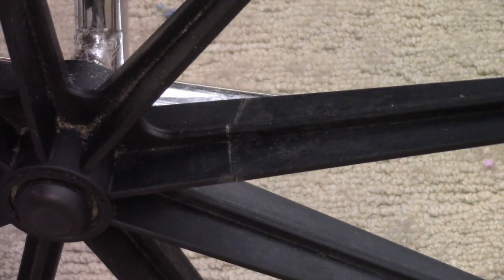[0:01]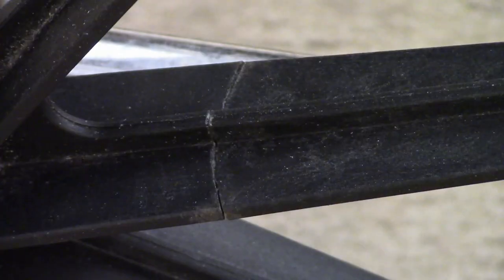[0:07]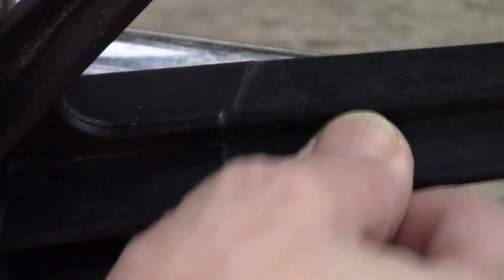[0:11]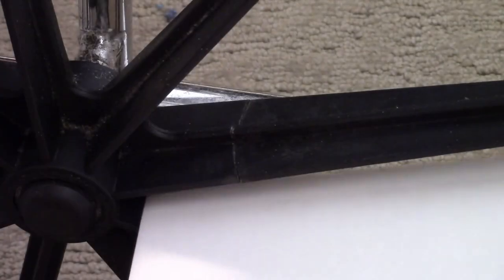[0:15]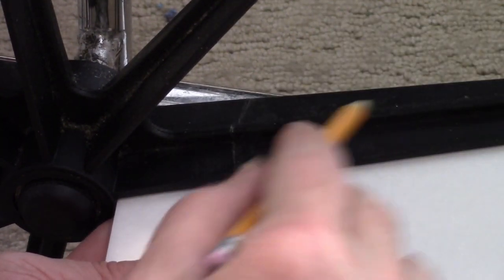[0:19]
My mother-in-law asked me to print her a new brake handle for her wheelchair. And while I had it, I looked at it and found a couple of other problems, including one of the spokes broken. There didn't seem to be a lot of strain on the spoke, so I thought I could print a splint for it.
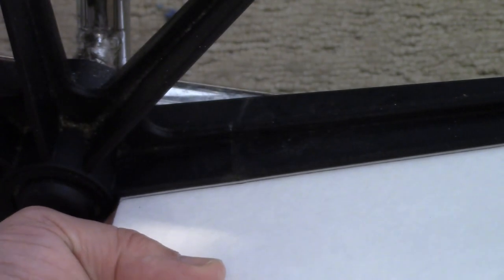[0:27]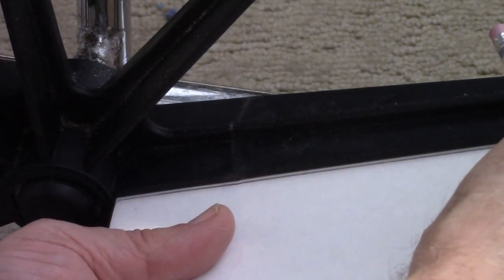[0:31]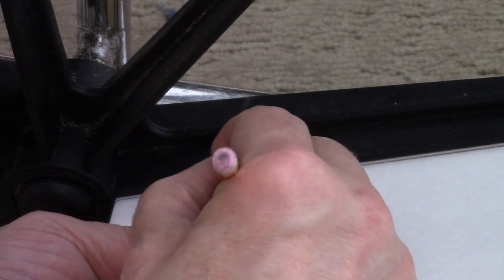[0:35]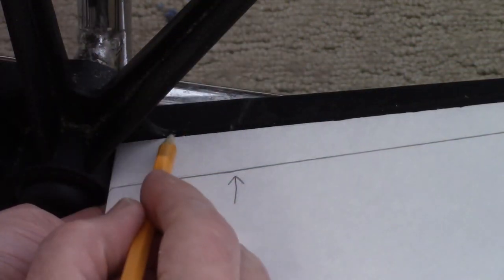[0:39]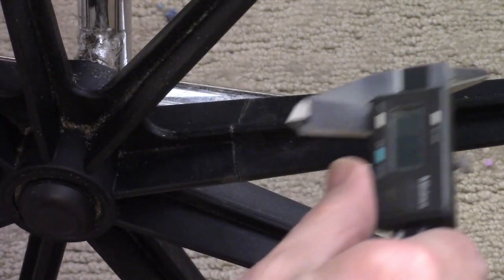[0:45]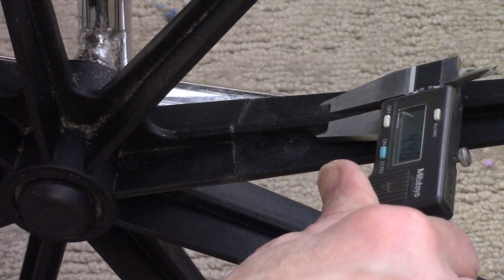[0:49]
I started by tracing the flange of the spoke on a piece of foam core, and then marking where the brake was. And I also marked where the webbing was from the hub inward. Next, I checked the thickness of the web part, and it was about 4.5 millimeters thick.
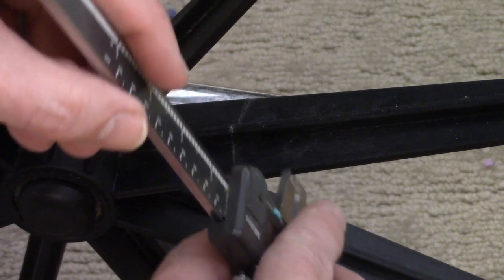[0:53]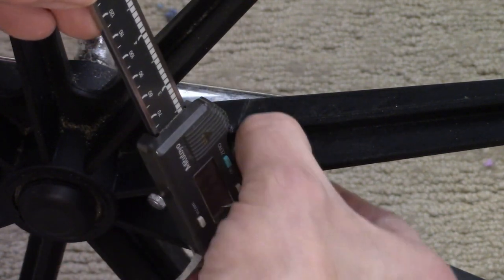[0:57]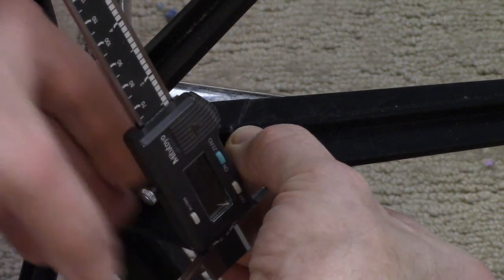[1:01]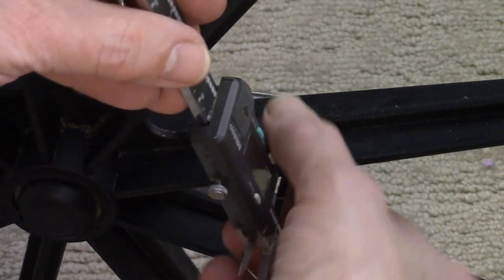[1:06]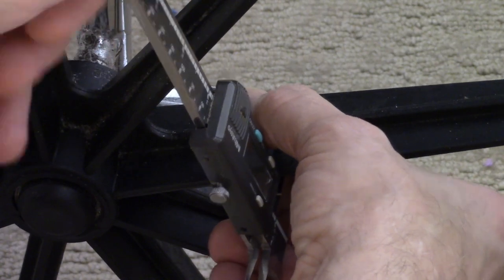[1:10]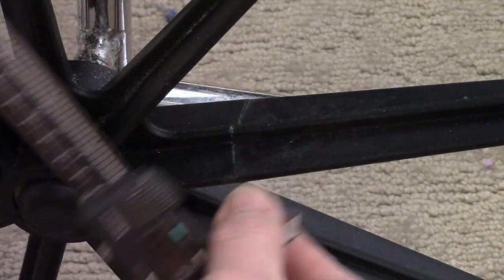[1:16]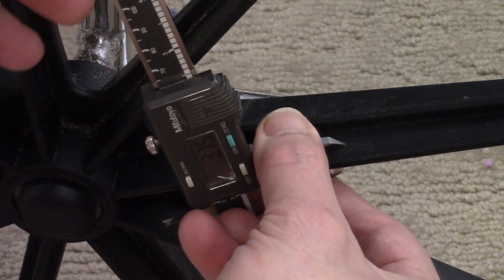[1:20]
To get the height of the web portion of the spoke, I measured the flange and then zeroed out the calipers, and then measured the whole thing, both of the webs total, and then divided by 2, and that gives me the approximate height of the web. And the flange was about 3.75 millimeters thick.
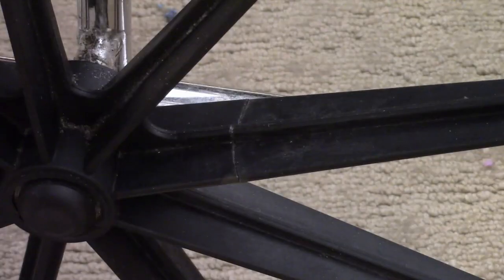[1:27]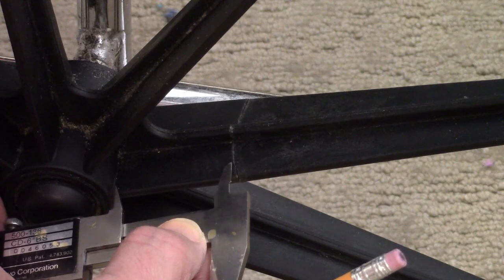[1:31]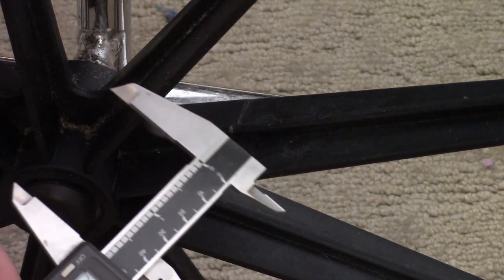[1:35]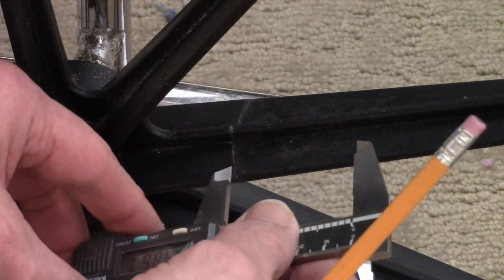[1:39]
Next, I measured how far the brake was from the hub. That's how much material I could get for the splint next to the hub. It was about 48 millimeters. So I wanted to make the splint at least 95, maybe 100 millimeters long.
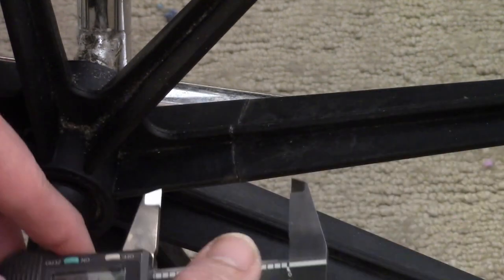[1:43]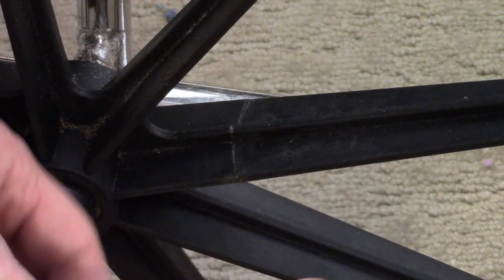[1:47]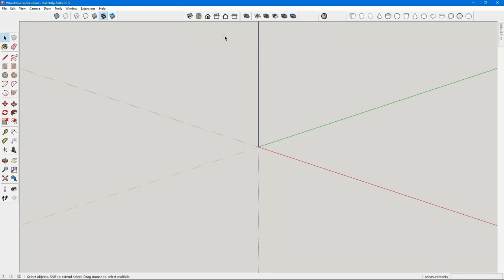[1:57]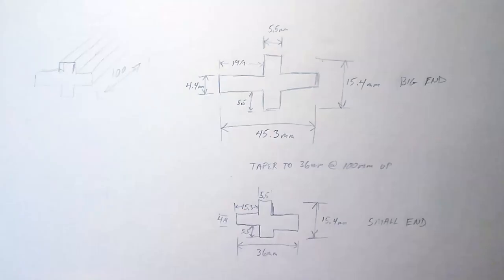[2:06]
I don't know how long ago the spoke had broken, but it looked like it had been quite a while. But it also didn't seem to affect the function at all. So I thought a splint should do just fine for quite a while, or at least until she could buy a new part. I used the measurements of the spoke to make a cross-section model of the spoke in SketchUp, and I used that to build the spoke splint around.
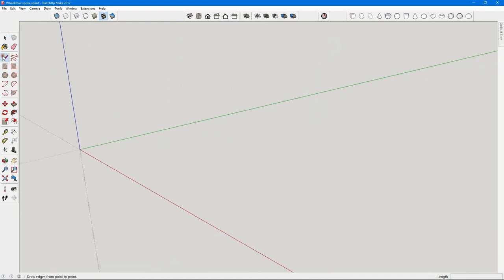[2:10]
I used the line tool and just started drawing around the edge of the spoke. I started with 4.5 millimeters for the thickness of the flange, and went out in one direction along the axis, and then 19.9 along the flat edge of the flange, and then up 5.5 for the web, and then also across 5.5 for the web, and then back down the 5.5.
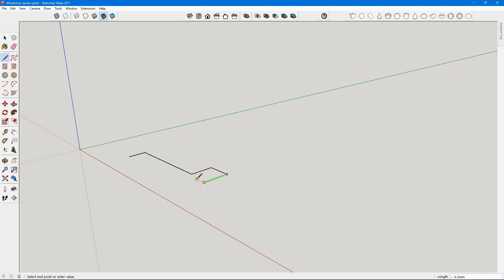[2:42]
And with that, you can use the snap tool and snap to the other things that are already that same length. And then continued out 19.9. And then again, coming in 4.4 and then snapping to the 19.9 again. Then coming out 5.5 for that side of the web. And then snap to it. And then again, using the other guide points and the control key to snap to them. Okay, that's the shape of the spoke at the base.
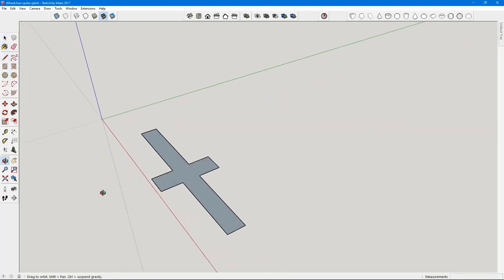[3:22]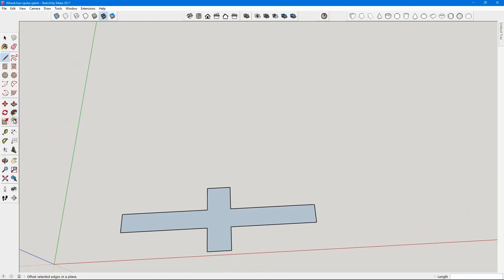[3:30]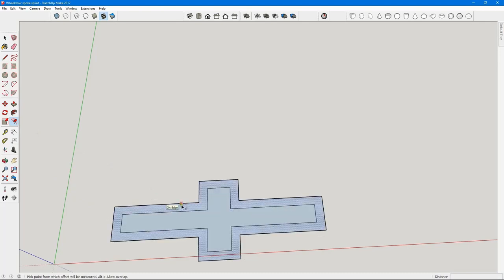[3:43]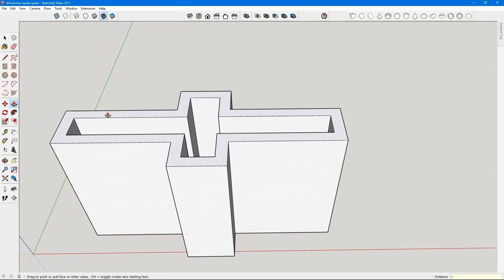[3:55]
Now I want the splint to be about 2 millimeters thick, so I'll use the offset tool and start pulling it out and then type in 2 and enter to get a uniform 2 millimeter thickness. That gives me a thickness, and now I can erase the center portion. Next, I'm going to make it about 100 millimeters tall, so I'll just click on it with the push-pull tool, pull up, and then type in 100, and then enter.
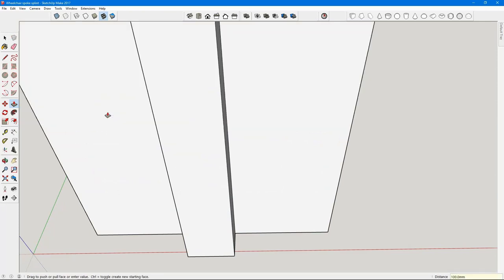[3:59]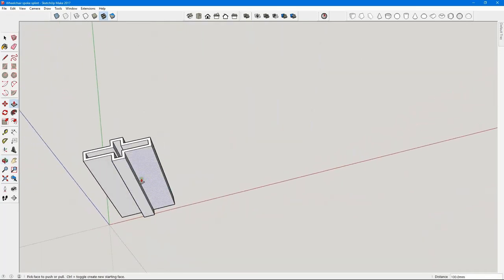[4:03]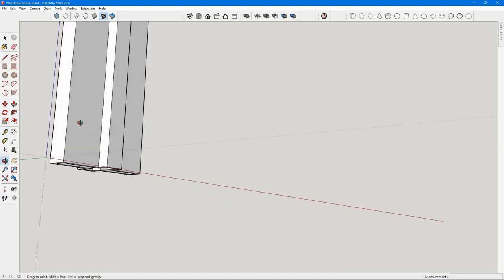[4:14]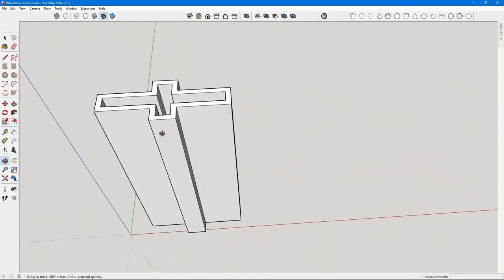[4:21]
So the spoke tapers. At one end, it's 45.3 millimeters wide on the inside, and at the other end, it's 36 millimeters wide. So I need to taper the top down. It needs to be 36 millimeters from inside to inside, or 40 from the outside with the 2 millimeter edges. So I'll start by putting a guideline and snap to the center.
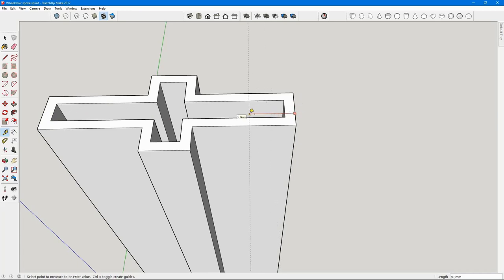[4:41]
And from here, I'll measure each direction out half of my 36. So I'll type in 18 and enter, and then 2 more to give me the thickness of the wall. And I'll do the same thing on the other side. So 18 and then two more and enter.
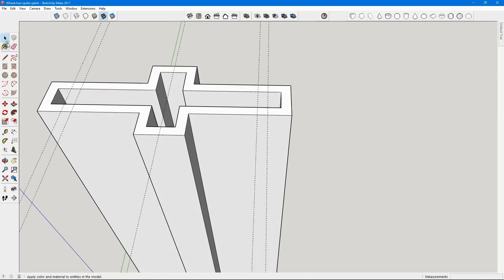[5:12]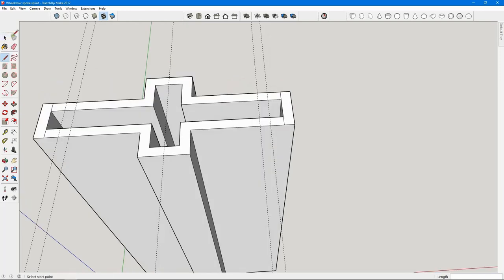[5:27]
To taper it, I'm going to use the move tool. So I want to put a line across the end so that I can isolate that side piece. So next I'll select one of those end pieces and then use the move tool. Click in the center of it and then just move it till I get to the guidelines. And it'll snap to it. Then I can do the same thing on the other side. I'll just select it, use the move tool, click on the center, and then pull it in until it snaps to my guidelines.
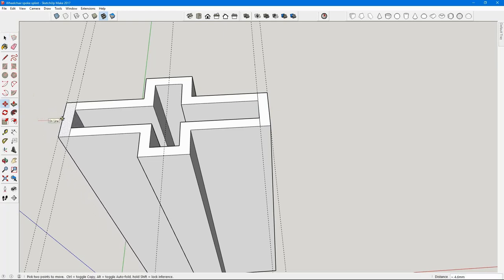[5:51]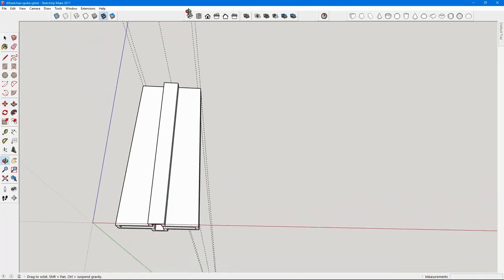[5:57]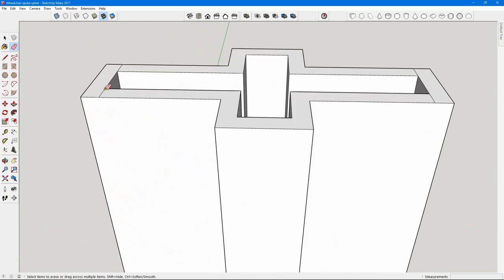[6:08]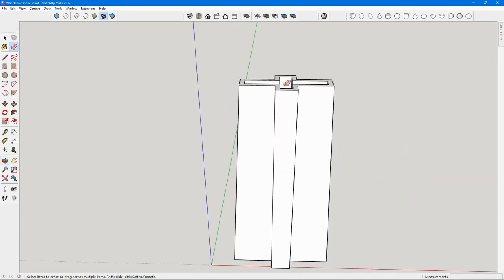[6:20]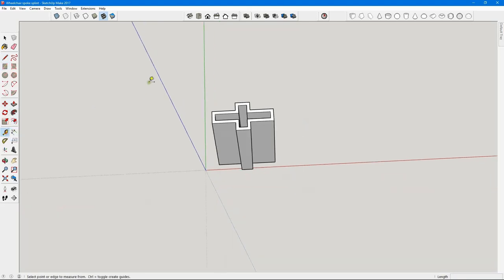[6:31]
Now I have the tapered spoke splint. I can erase the extra guidelines. Now I need to make it into two pieces so I can wrap it around the existing spoke. I can get rid of these extra lines that I drew, just erasing them. I'm going to have one side wrap around the spoke, and the other side will be kind of the flat top part with just the web portion wrapped around the top of it.
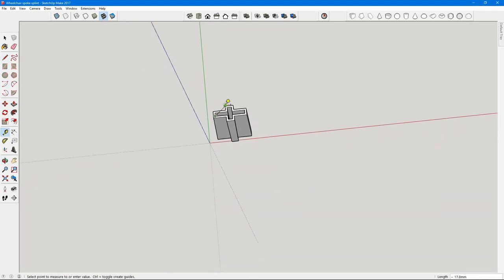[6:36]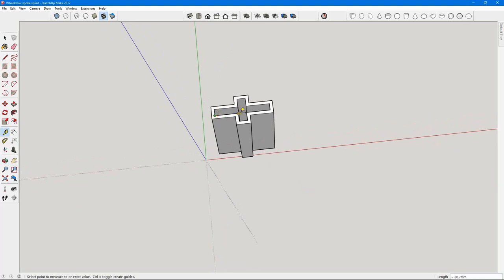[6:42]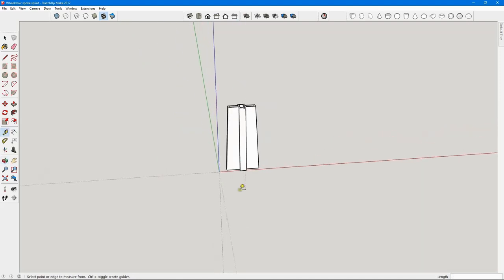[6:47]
With the amount of taper, I have 18 millimeters from the side of the flange to the center at the top. And at the other end, a little bit more than 22 millimeters. And so I have a taper of a little more than 4 millimeters. So that'll allow me to put an edge up the side that's about 4 millimeters wide and still be able to put the splint around the spoke and then slide it up into place.
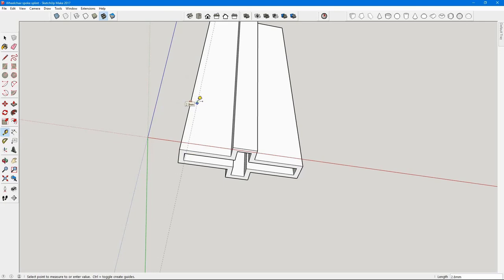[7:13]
I'm going to start by putting a guideline parallel to the edge and 6 millimeters in. So 4 millimeters plus the other two for the sidewall. Then I'm going to put a second line 6.1 millimeters away from the side. And I'm going to do this on both sides.
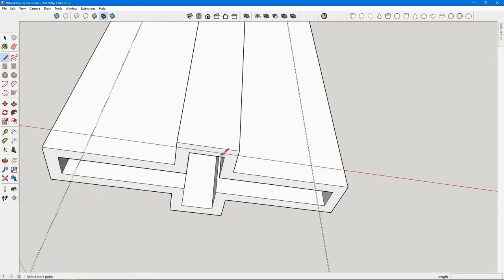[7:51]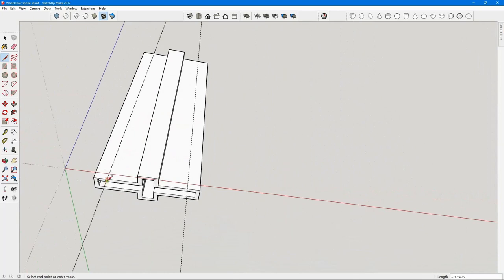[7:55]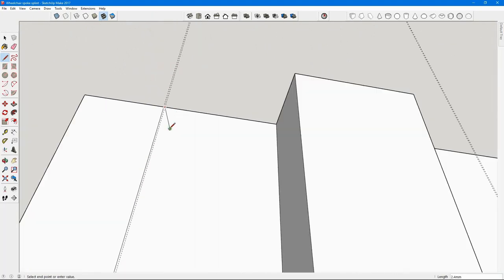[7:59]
So 6 and then 6.1 away from the side and parallel to it. And then next, I'm going to zoom in on it and then draw a line along those guidelines. So on each side, I'm going to just draw along there.
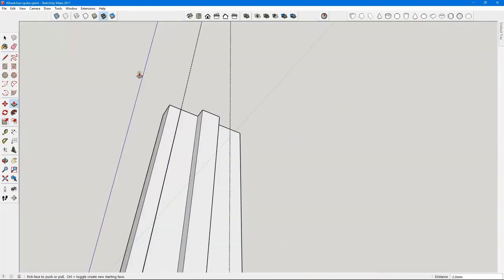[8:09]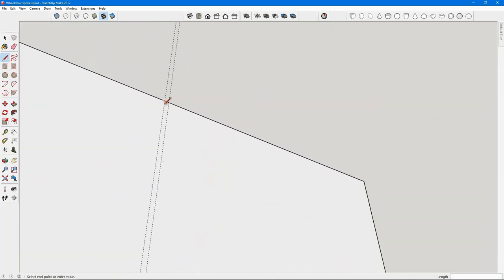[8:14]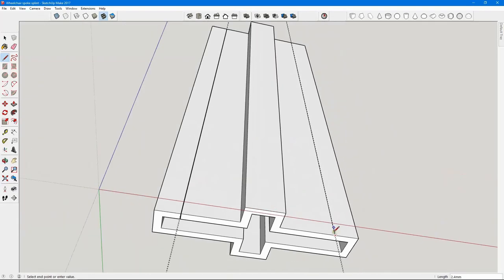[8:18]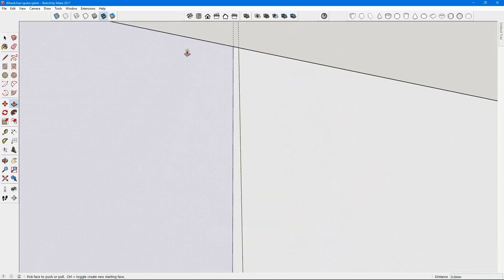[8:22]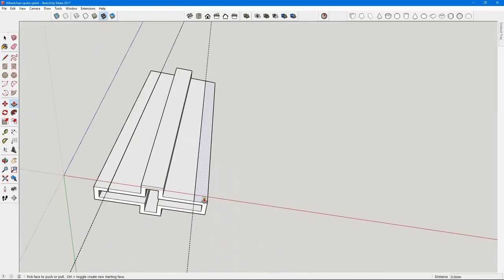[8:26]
Then using the push-pull tool, I'm going to push the 0.1 millimeter space down. And again, do that on the other side. Trace the lines, and then with the push-pull tool, just push that area down until it's even with the bottom edge and has zero thickness.
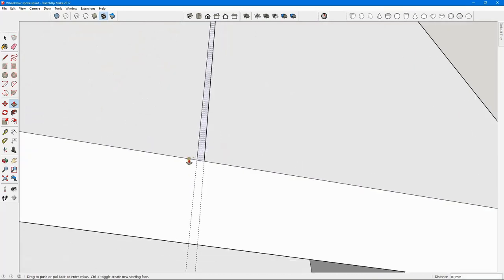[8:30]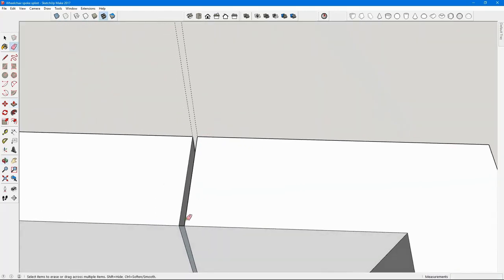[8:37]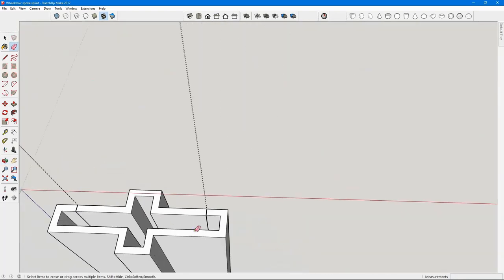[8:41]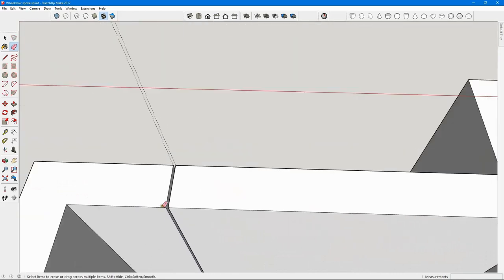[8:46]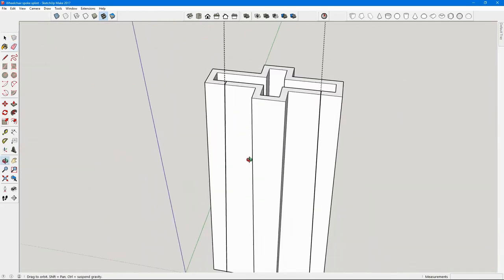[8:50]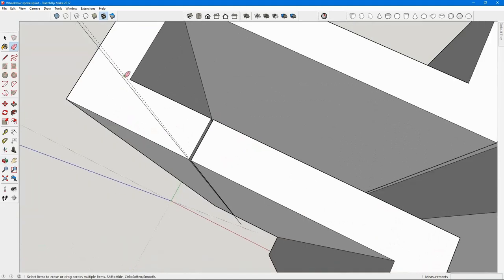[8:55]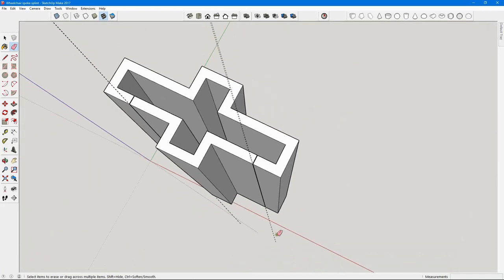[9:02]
And then with the eraser, I'll erase the extra little lines. This will make it two separate pieces with a 1/10 of a millimeter gap between them. That way I'll be able to put it on the spoke and slide it into place without it binding. So just erasing the extra pieces. And then the guidelines can be erased also.
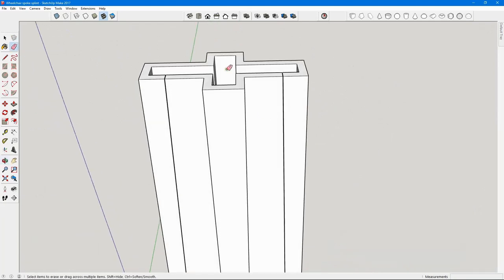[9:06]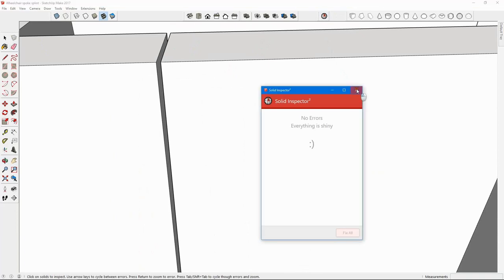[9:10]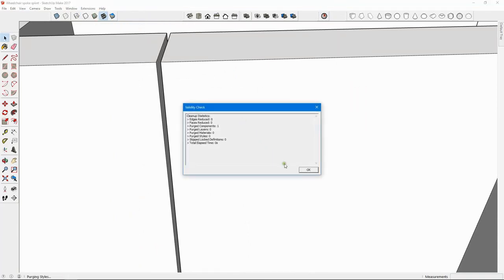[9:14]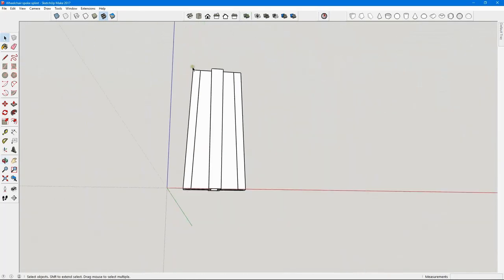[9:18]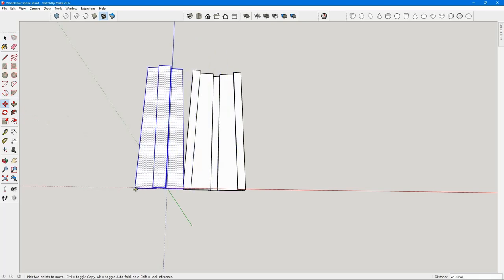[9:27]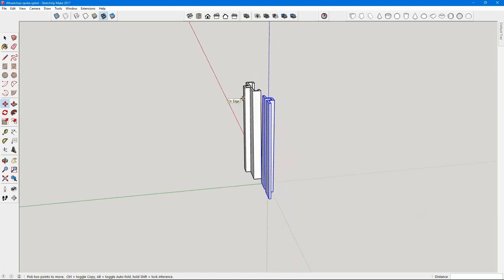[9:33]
And next I'm going to use the solid inspector to make sure that everything's okay. And then also the cleanup tool. Okay, finally, I'm going to select the center portion by triple-clicking on it and then moving it over. Then I'm going to rotate it down into the position I'd use to print.
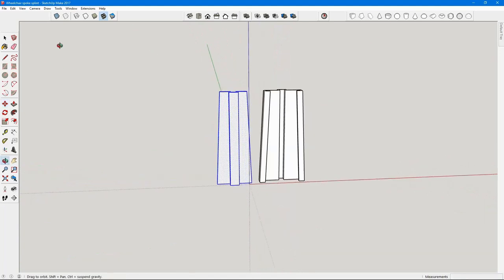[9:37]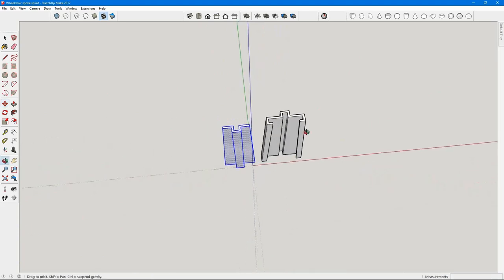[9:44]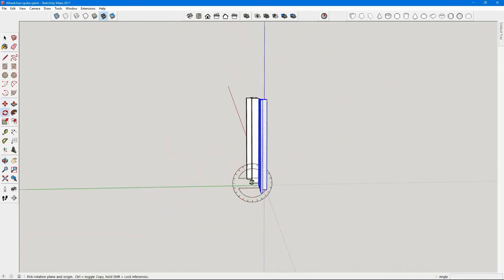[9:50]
I would print the other piece standing up, but this one I would print laying down. That way, both of them can be printed without support, and it will make them stronger. One will be printed flat, and one will be standing up. So once they're glued together, they'll add to each other's strength.
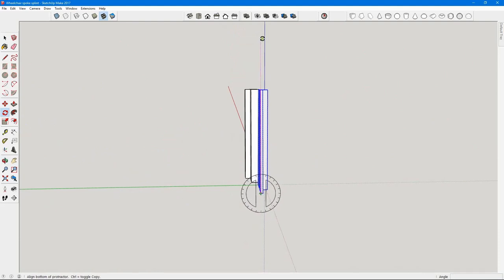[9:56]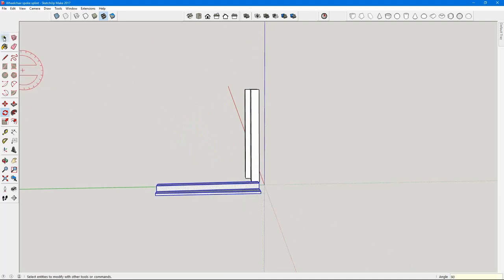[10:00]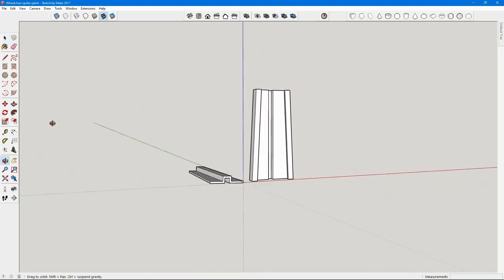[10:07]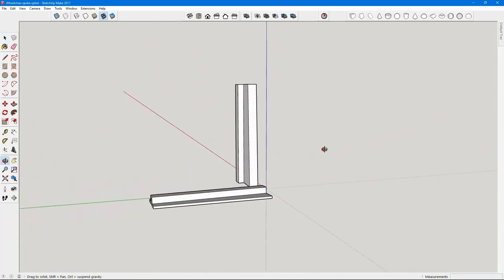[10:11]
So using the rotate tool, just grab the endpoint and then rotate it down, then type in 90 so that I get the exact angle. So that's the orientation I would print them in.
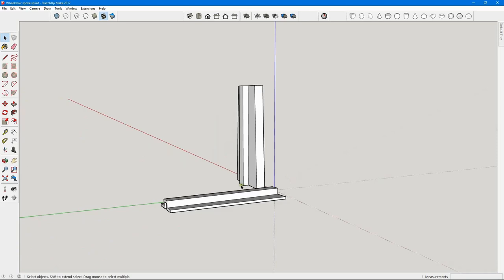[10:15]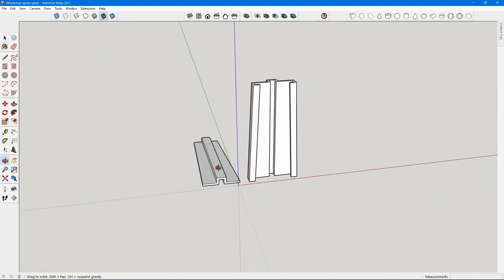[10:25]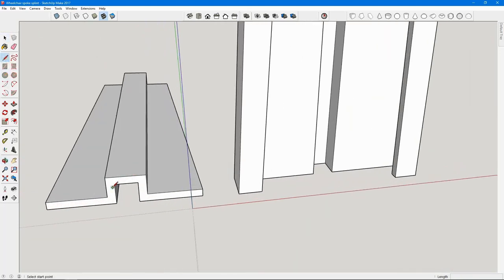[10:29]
One last thing I forgot to put on was the little slot for the center spline next to the hub. Or the web next to the hub on the wheelchair. So I'm just going to put a line across the open area and then push it down 21 millimeters. Then I'll do the same for the other piece.
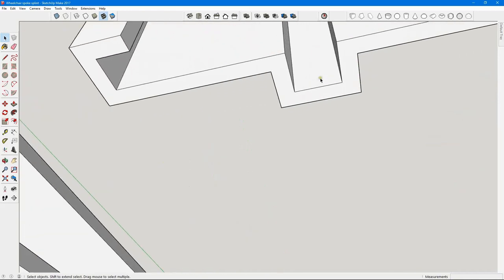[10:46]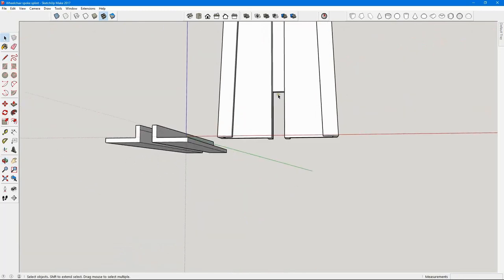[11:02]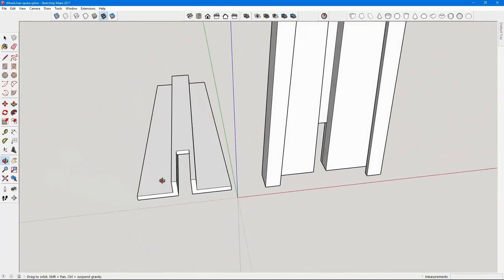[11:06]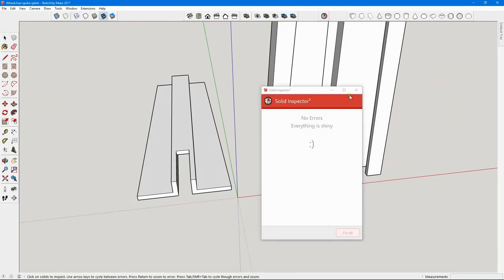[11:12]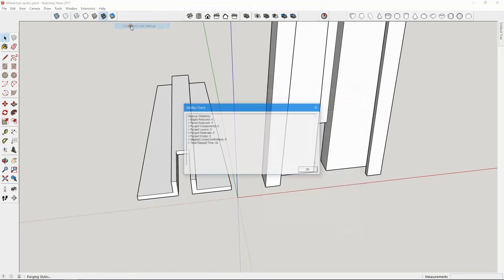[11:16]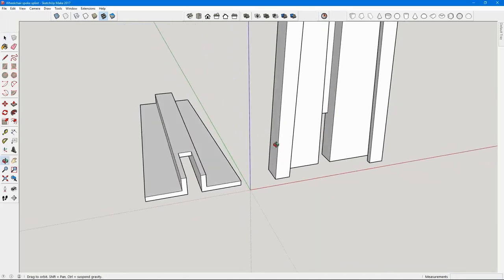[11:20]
So just draw a line across both of those sides, and then with the push-pull tool, just start pushing up and then type in 21 and enter. Run the solid inspector tool and the cleanup tool again to make sure that everything is good with the part. And then finally save and then export STL so that it's ready to print.
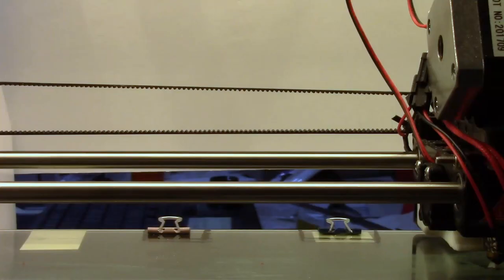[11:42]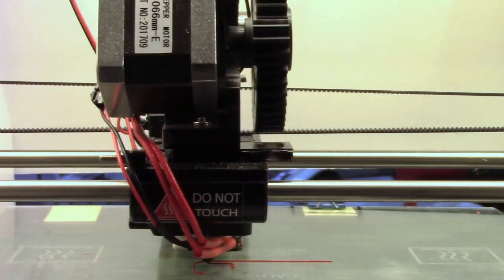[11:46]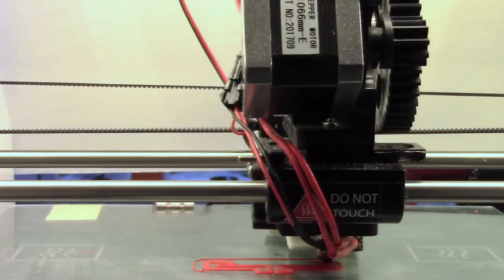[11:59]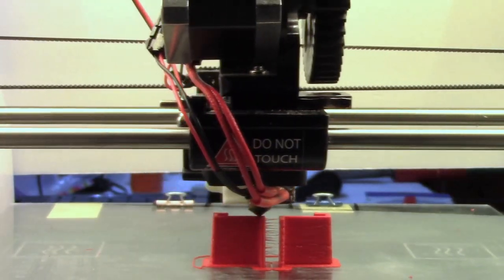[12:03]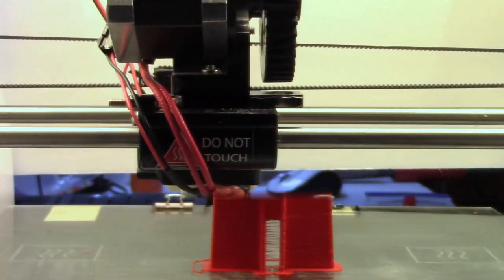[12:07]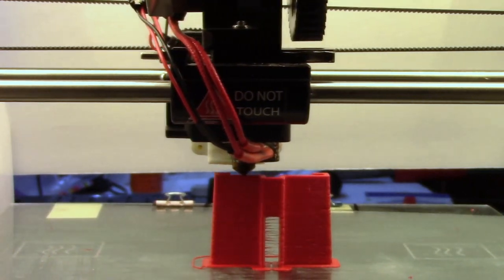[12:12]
I printed these using Repetier-Host and a RoboPrinter. I sped it up a lot and jumped from cut to cut. Almost nobody wants to watch 3D printing in real time, except maybe me. I printed the bigger piece standing up and the smaller piece laying down. It worked out really well and I didn't have to have any support.
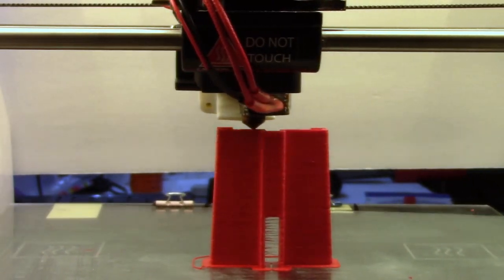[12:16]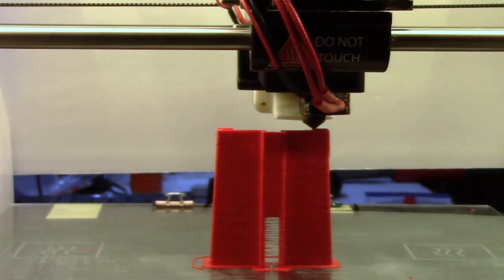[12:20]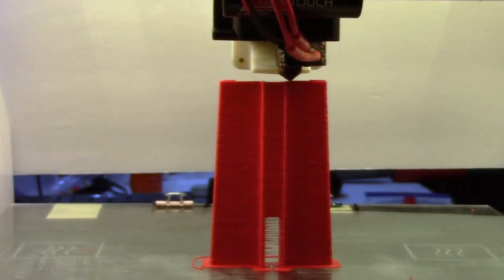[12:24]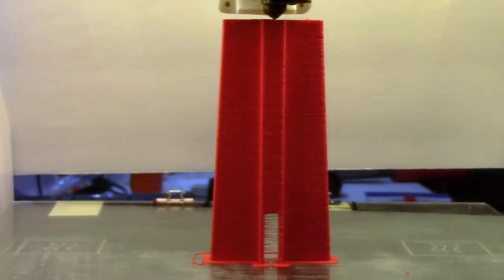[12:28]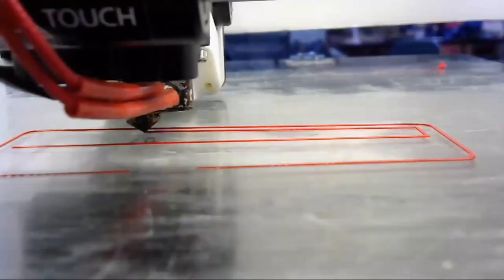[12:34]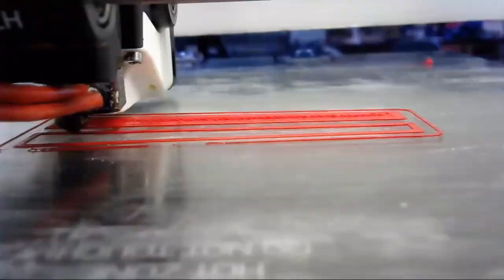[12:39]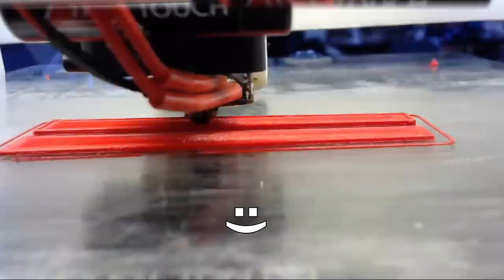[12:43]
You can tell from the stringing in the bottom middle area that I'm running too hot and probably running too slow also. This is the printing of the smaller piece that I printed laying down.
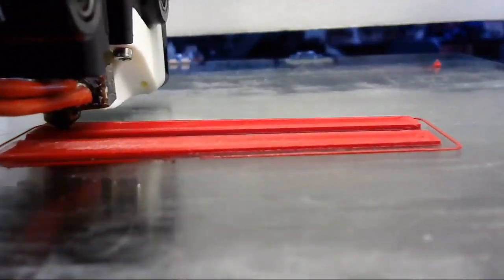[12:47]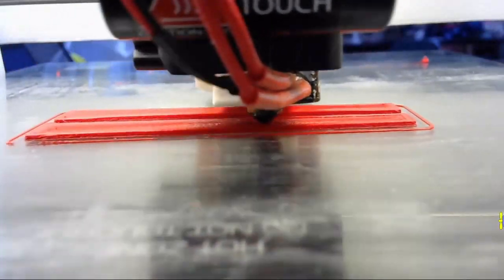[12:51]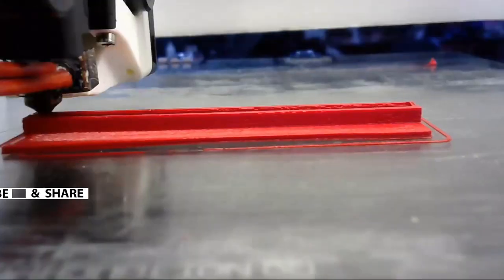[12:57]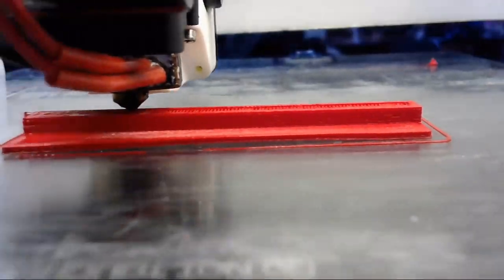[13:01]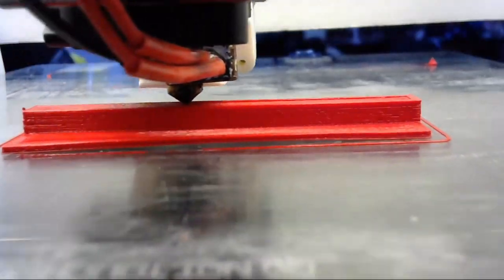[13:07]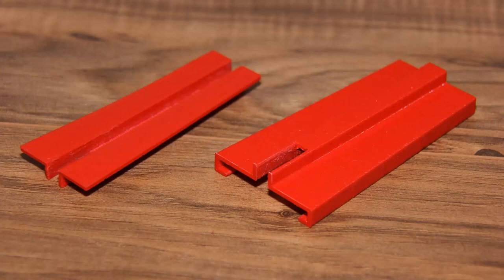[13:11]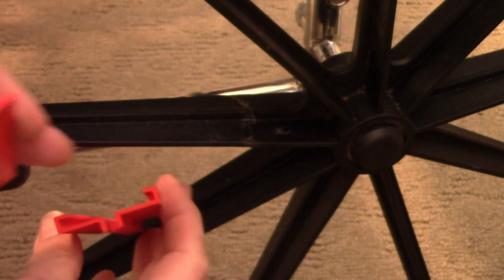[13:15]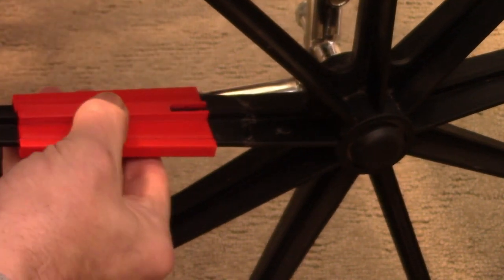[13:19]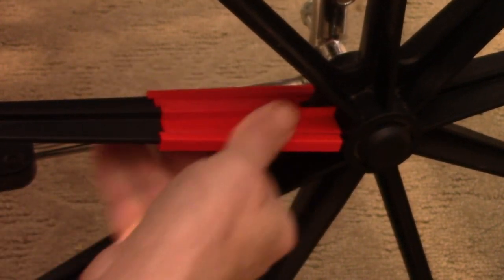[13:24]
Here's a picture of the two parts of the splint after it's finished printing. And this is how it goes onto the spoke. They just go down low on the thinner area and then slide up toward the hub. And that locks them into place.
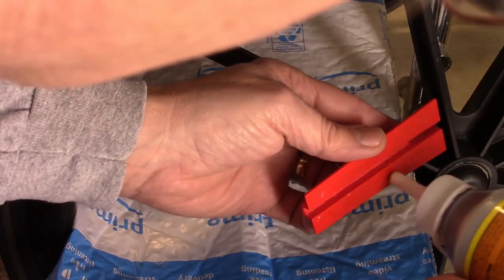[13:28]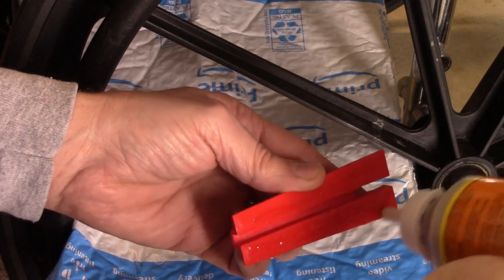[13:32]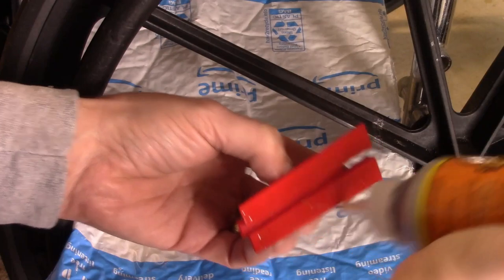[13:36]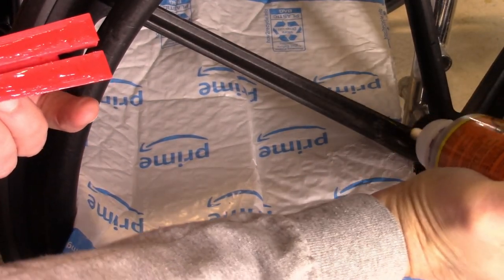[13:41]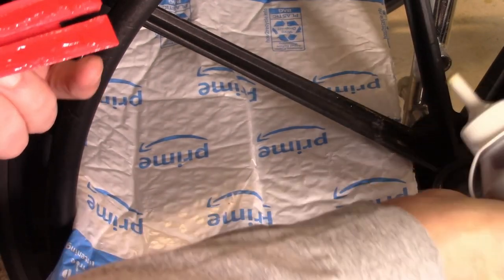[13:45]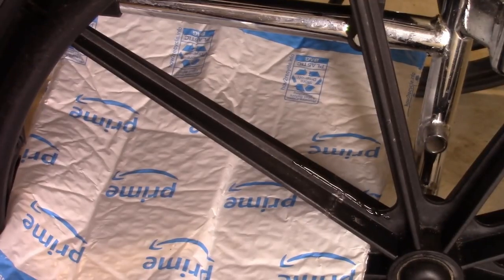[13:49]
I'm just putting a small amount of Gorilla Glue on the small piece right now. And making sure to get the ends. And then I'm putting a little bit on the web portion of it that I can't reach in on the printed part. Next, I just slide it into place.
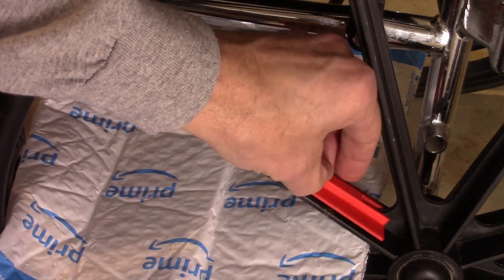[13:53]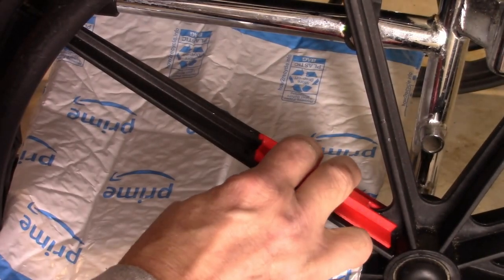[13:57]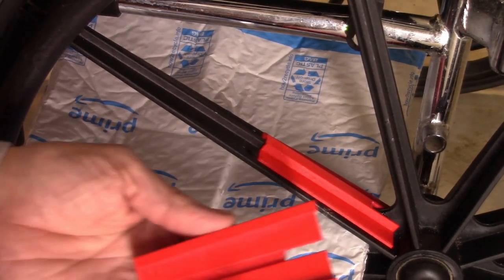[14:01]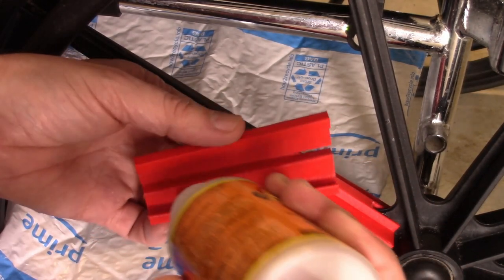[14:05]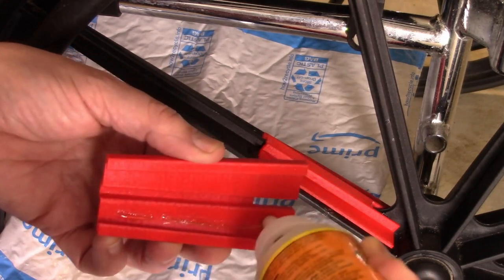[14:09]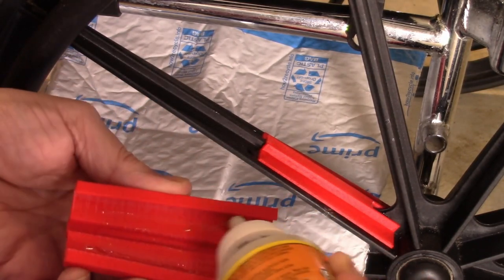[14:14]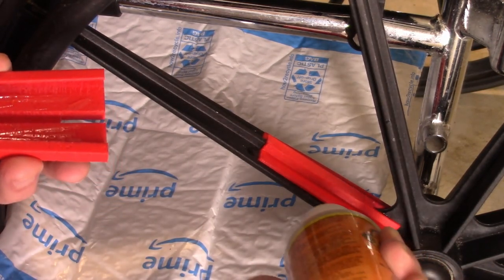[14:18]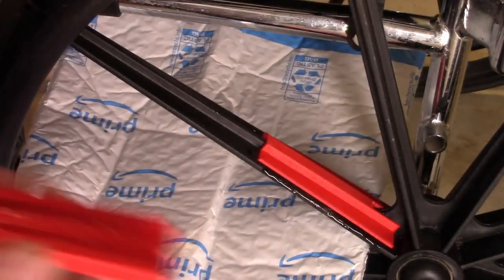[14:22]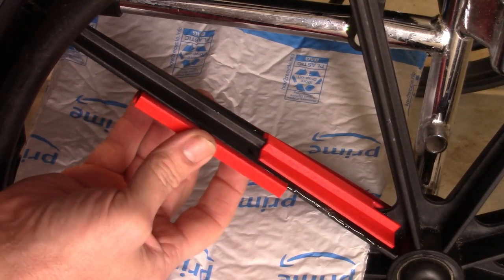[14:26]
On the other 3D printed part, there's other areas that I can't really get to. But I just put a small amount of Gorilla Glue on all the areas that I can reach. And then I put a little bit of glue on the edge of the flange. Then again, I put the piece on low onto the spoke and then slide it into place.
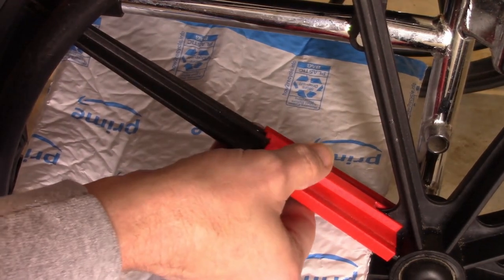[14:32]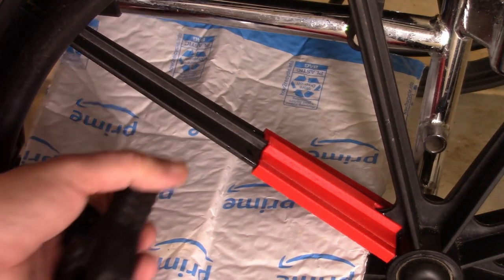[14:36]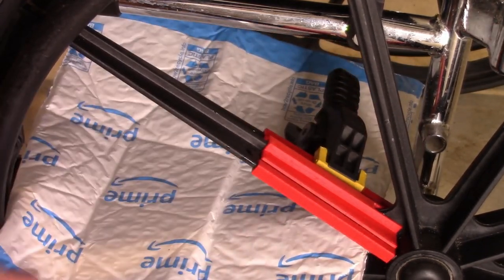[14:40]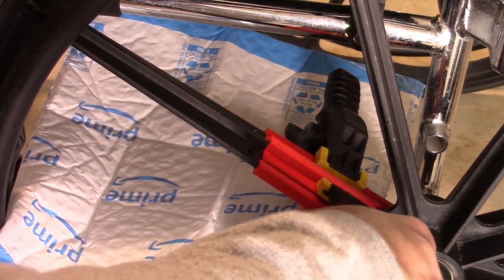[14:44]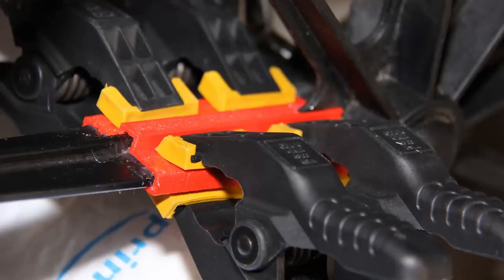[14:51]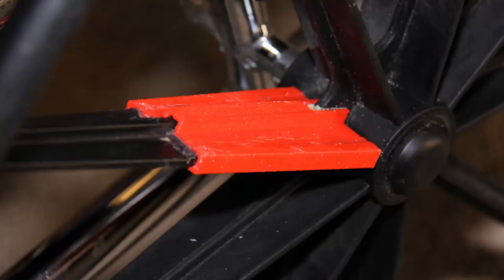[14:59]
I put some spring clamps on it, two on each side, and then leave it overnight. I just have a still picture of the clamping, because apparently you have to press the record button to get a video. And this is the finished piece on the spoke. Really came out nice and very sturdy.
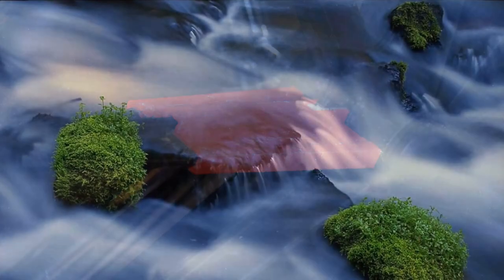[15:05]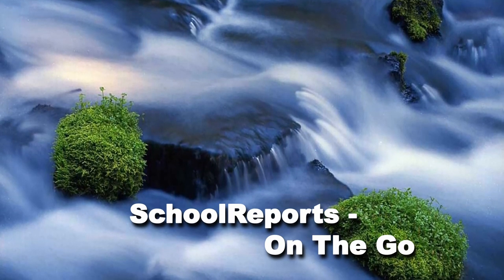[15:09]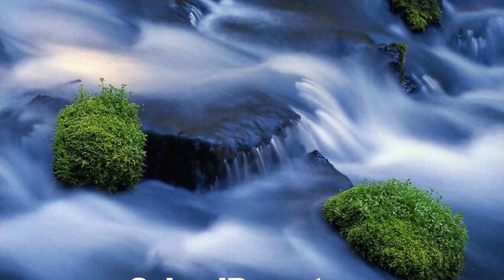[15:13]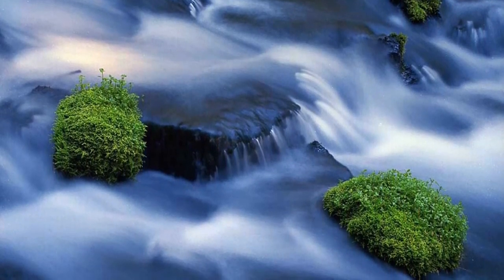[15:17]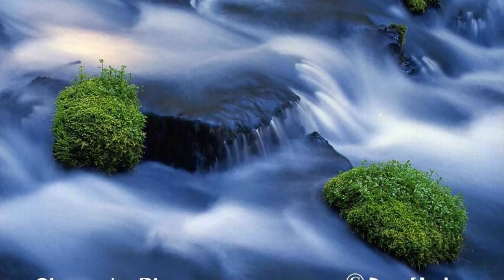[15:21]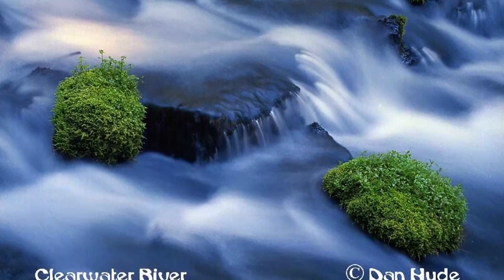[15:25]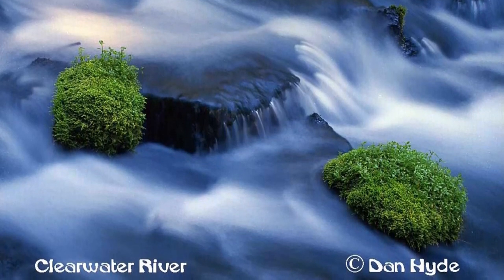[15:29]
Well, thanks for watching. I hope you enjoyed it. I wanted to make a video that shows the process from beginning ideas all the way to the finished product. But I wasn't sure if it's too much detail. It seems to go on for a while, but I've cut out tons of time. I just wasn't sure how much was too much. Let me know. Thanks.